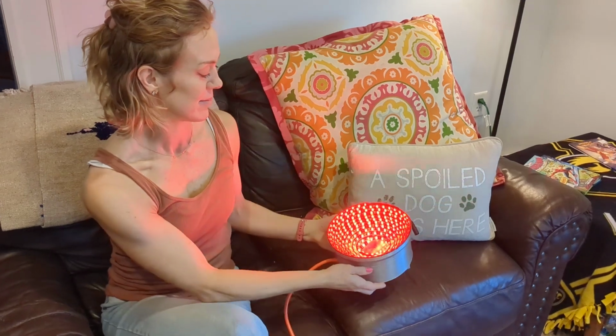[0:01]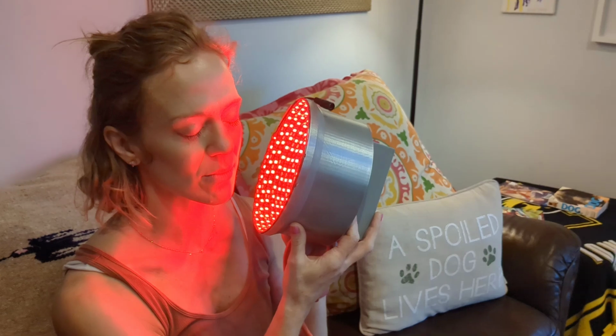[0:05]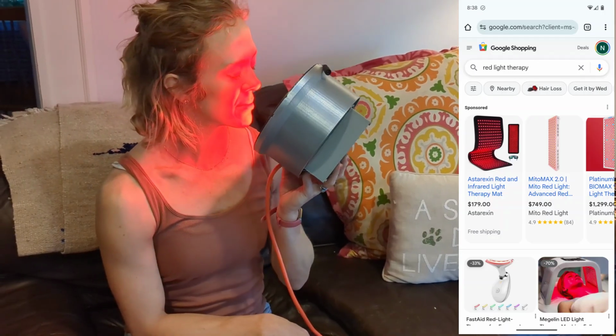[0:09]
This is a $38 red light therapy device that's putting out 60 watts of power. You can spend hundreds or thousands of dollars to purchase the same thing, or you can make it yourself with the plans in this video.
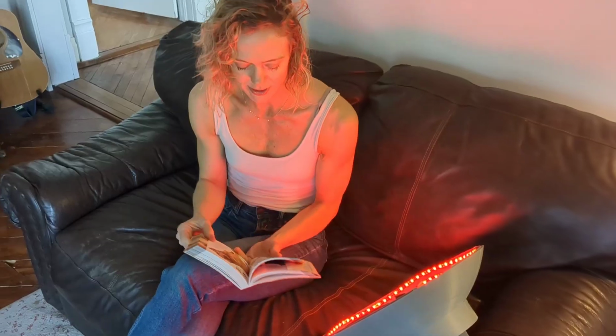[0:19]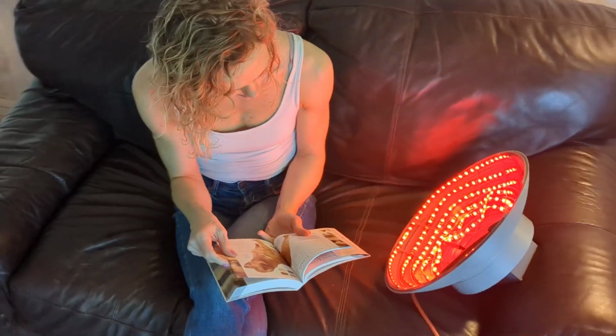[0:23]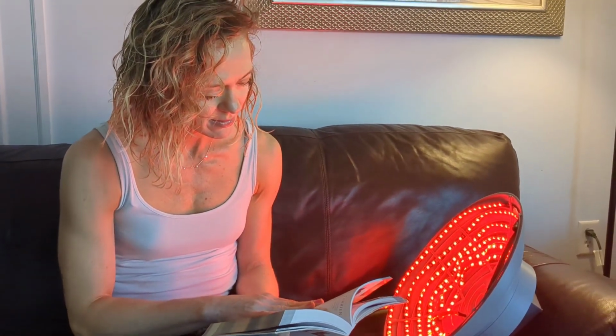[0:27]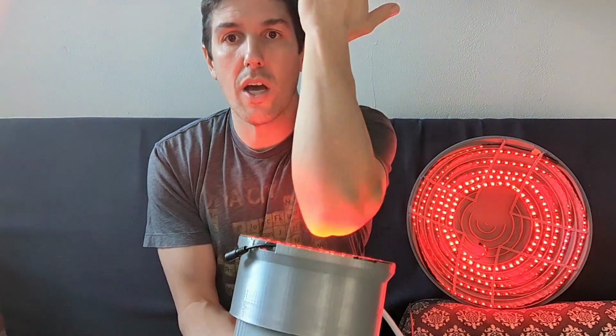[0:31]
Now, red light therapy involves shining light between 600 and 700 nanometers, which is just red light, on your skin, and sometimes 880 nanometer infrared light. Purported health benefits are myriad. Wrinkle reduction, skin health improvement, as well as maybe reducing soreness on joints. I've read some of the scientific papers and it's compelling. There is possibly something there, but more science needs to be done before something can be definitively said.
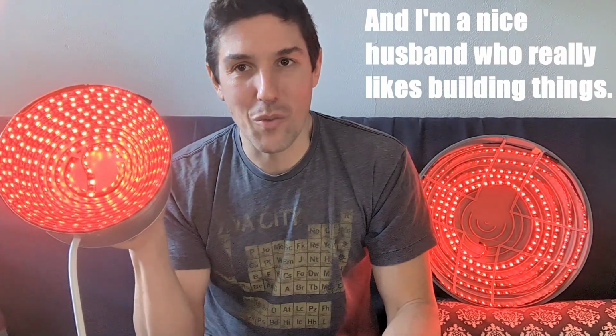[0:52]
So I'm not an evangelist for red light therapy. I can't tell you how to use this and what benefits you should expect. But my wife wanted a red light therapy device. She's been seeing it in her Instagram feeds and wanted one of these things.
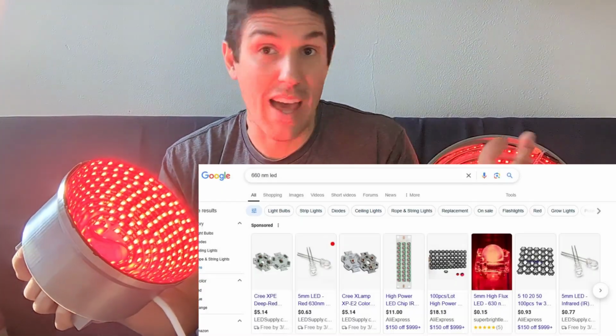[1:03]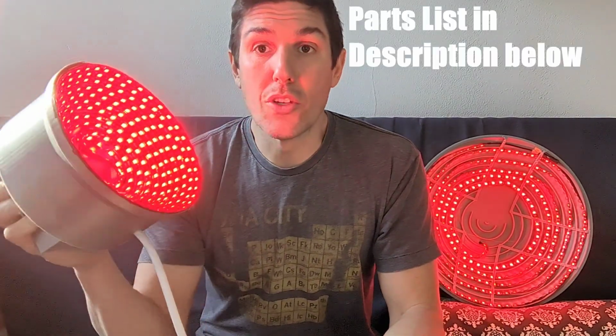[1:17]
And so I looked into it and it's just a 660 nanometer wavelength light. And that is a really common red LED. There are hundreds, thousands probably, of red LEDs at 660 nanometer wavelength, different power, different form factor. They're already out there. So making one of these things is not terribly difficult. So I went ahead and built two different versions of it and it turned out really well. The total cost of the parts here is $38.
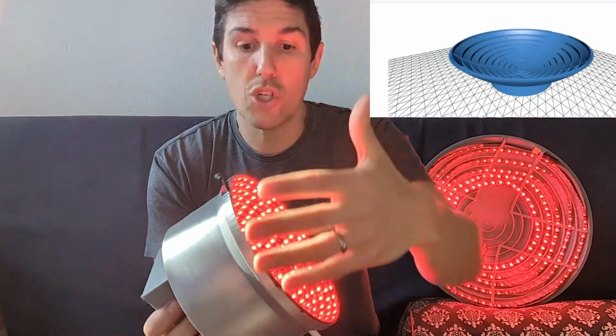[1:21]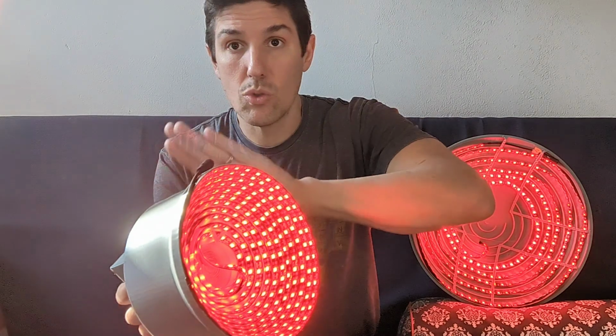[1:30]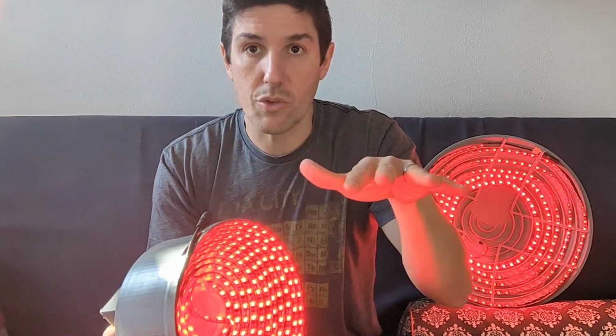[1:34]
This is a 3D printed shell where I was able to wind all of the LEDs and mount them inside of this thing. And in this video, I'll show you how this is assembled, and the links to the 3D printed files are in the description below. Everything's free. When you compare what you're getting here to how much you would pay if you were to buy this commercially, this is a steal. So let's have a look.
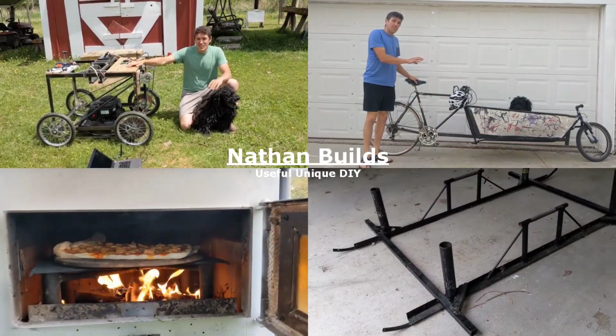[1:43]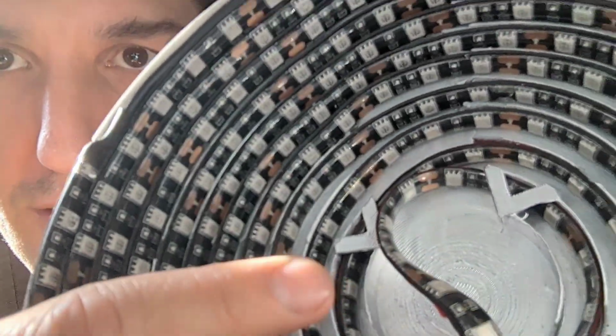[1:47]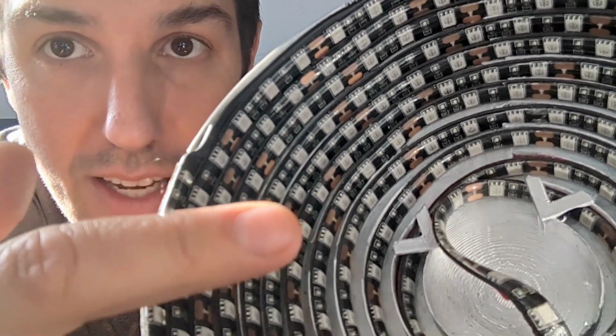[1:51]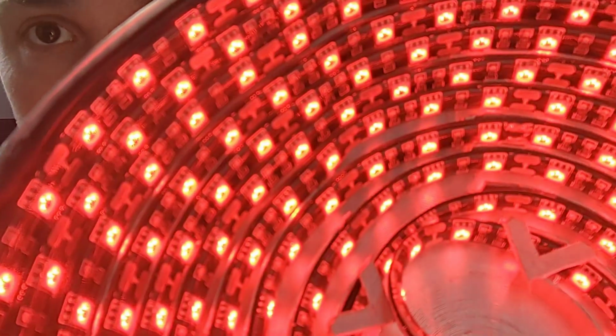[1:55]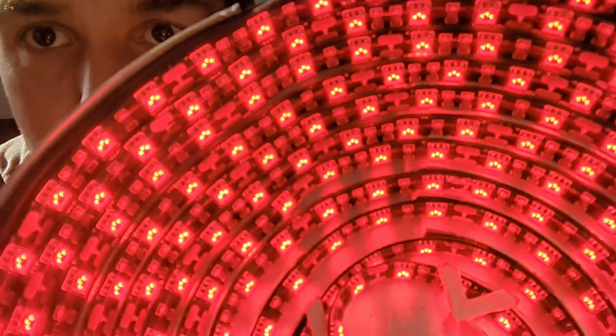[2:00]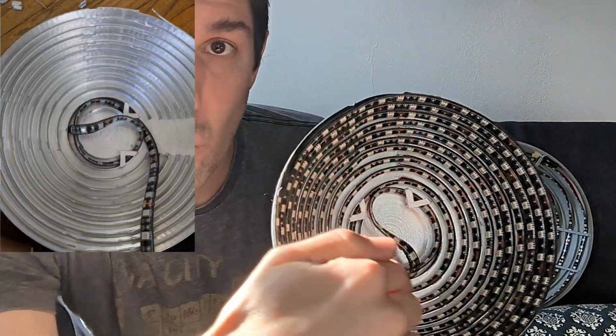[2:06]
What is this exactly? If you look closely here, each one of these little white things is a pack of three LEDs. This is actually just an LED strip that's been wound around and around. And when we turn this on and zoom way in, you can actually see the three LEDs. There's three red LEDs that light up in every one of those white spots. So this is a 16-foot long strip of LEDs that I've wound around in concentric circles until it gets to the middle here, and then it pops through this 3D printed case to the backside.
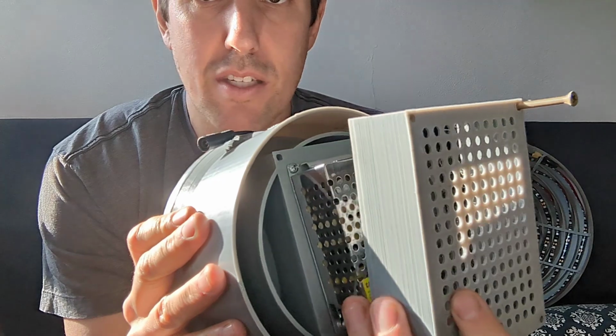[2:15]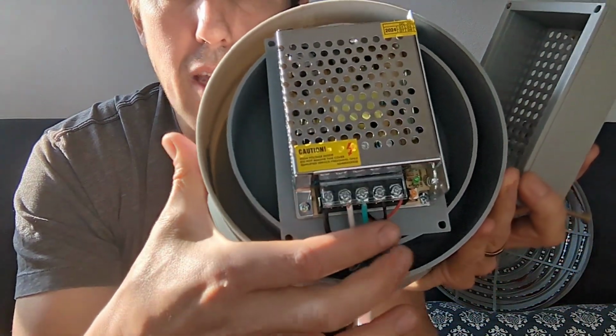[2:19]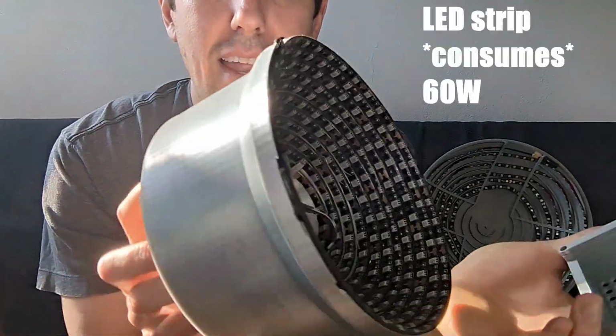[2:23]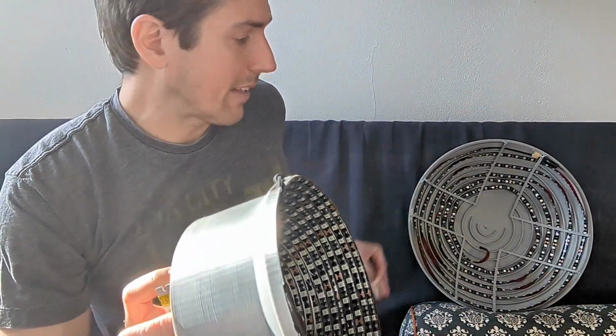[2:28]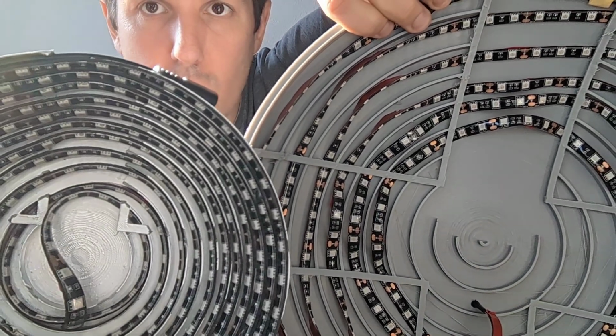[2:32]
Now on the backside here, this is the cover for the power supply. This is taking in wall power and putting out 12 volts. This is a 60 watt power supply and this puts out 60 watts of power. This thing over here is exactly the same, but on this one, the LEDs face out rather than in towards the center. That changes the focal point of these two things.
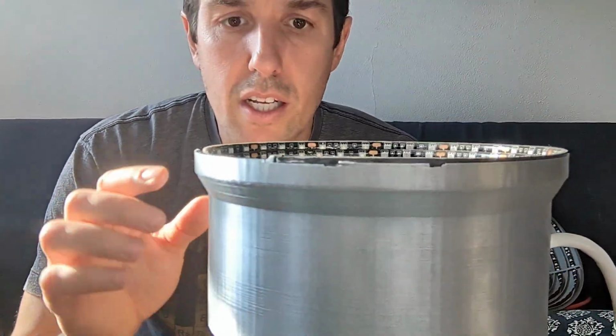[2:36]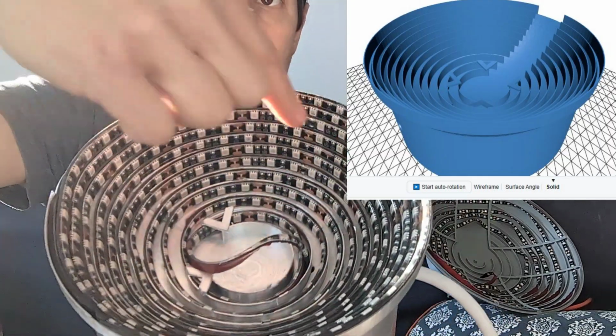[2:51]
Now this case right here was printed to be 200 millimeters across. That's the most common size of 3D printer that's out there. So I think just about anybody can find a 3D printer at your library or your local makerspace and be able to print something like this. And there's little concentric grooves that are in there, and that's actually what this LED strip sticks to.
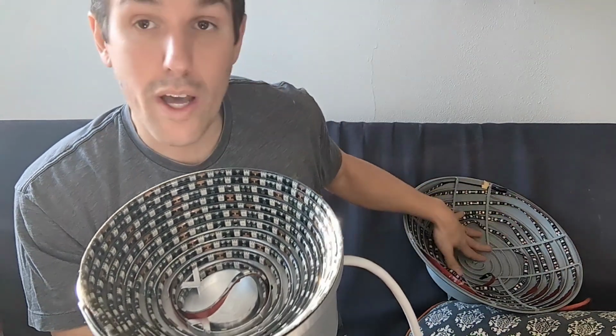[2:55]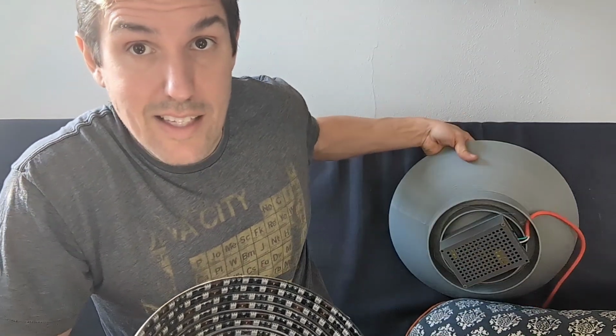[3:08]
Now this one over here is quite a bit larger. It's almost 400 millimeters across, so you're gonna need a really large 3D printer to make this work for you. But it does have a different use case, and if you can get access to a large 3D printer, this is another one that's worth making. It's the exact same power supply on the back and the exact same LED strip in the middle. They both put out 60 watts worth of power. To power this thing, you just plug it into the wall or you put it into a power strip like you heard there and click it on.
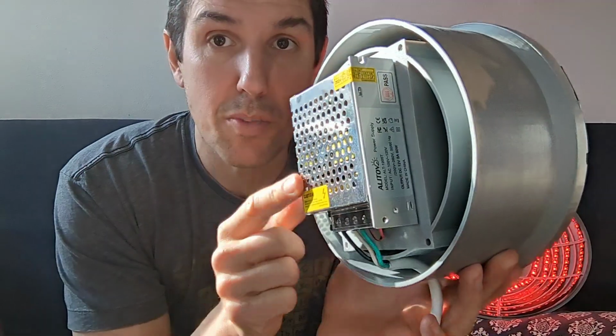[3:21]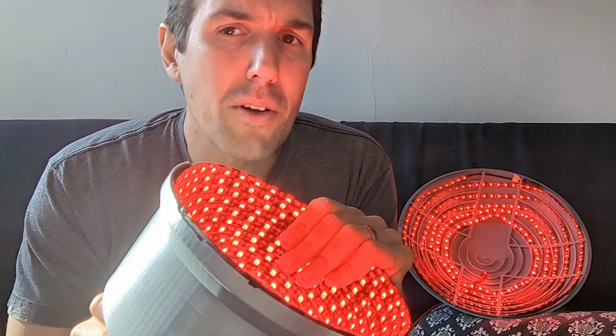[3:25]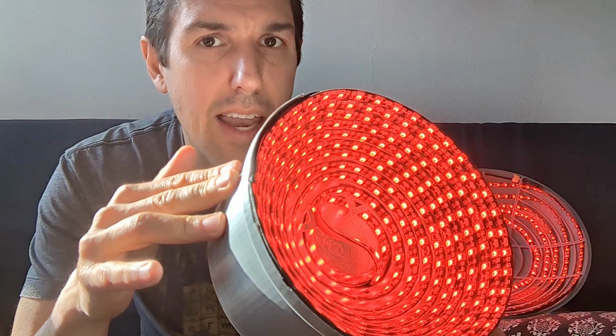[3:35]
The power supply starts putting out 12 volts of power and this thing lights up. Now, after about 10 minutes of use, and I cite 10 minutes because that's a commonly discussed time for red light therapy, this gets warm, but not hot.
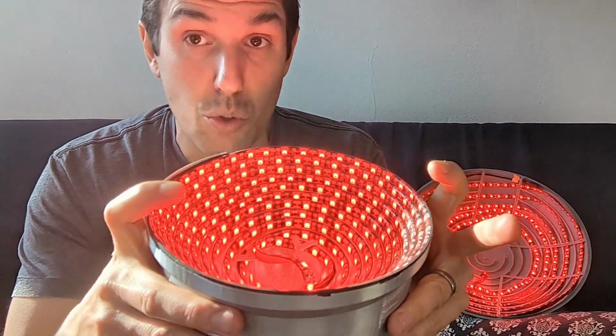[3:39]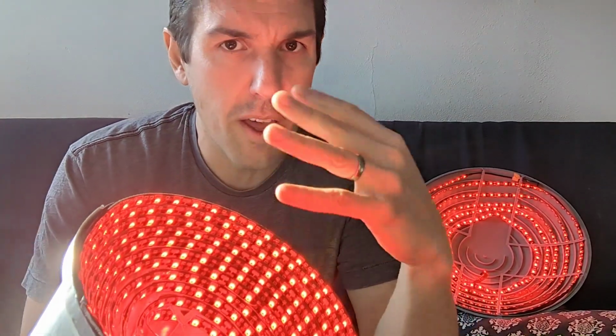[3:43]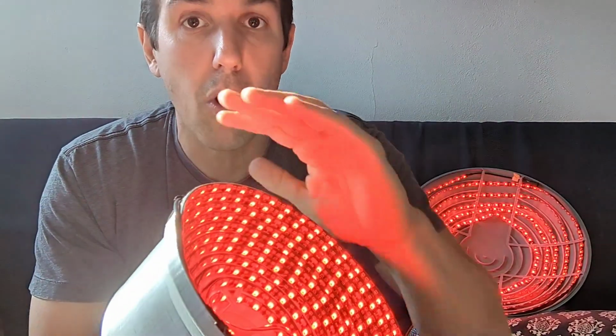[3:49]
And that means that most of our power is actually going into light rather than heat, which is a good thing. We want this to be efficient, and it does seem to be so, very efficient. It's putting out nearly all light and not actually heating up all that much. So most of what we're putting into this is going to be light that actually hits our face.
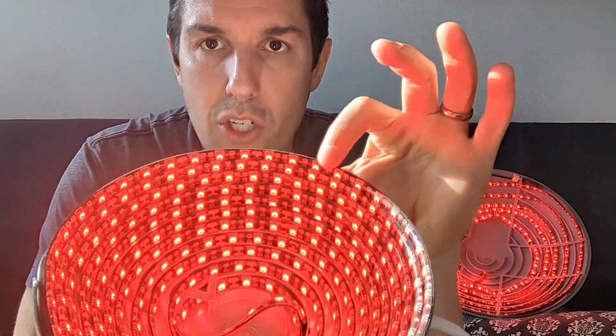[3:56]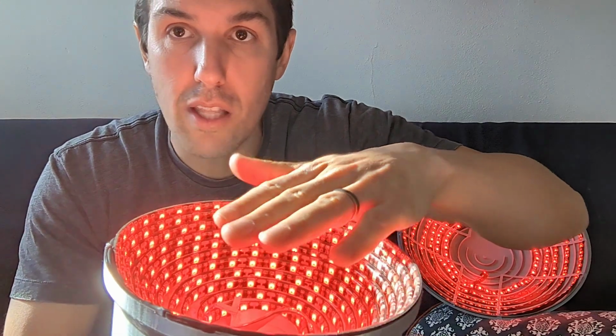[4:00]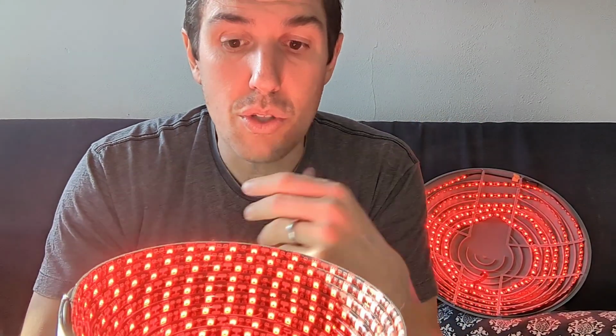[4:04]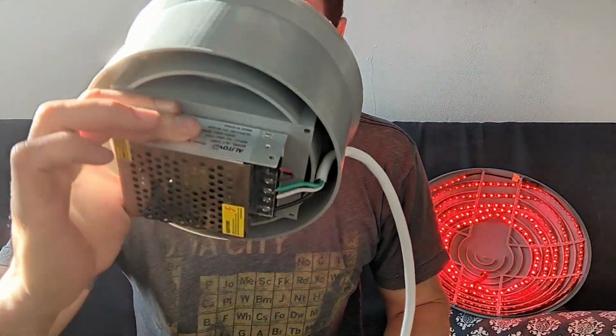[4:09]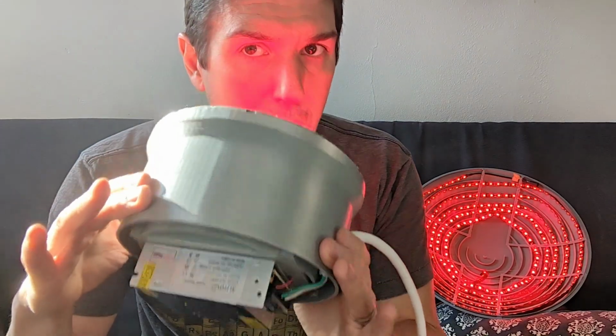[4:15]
This one here, as I mentioned, all of these LED strips are turned on end, so they're sort of facing their light towards the middle. The focal point is probably somewhere right around here. So an obvious use case for this thing would be, you can put an elbow or a knee into it, or even your entire face or your scalp if that's what you want to do. It's going to be used very close up though, so probably held in place.
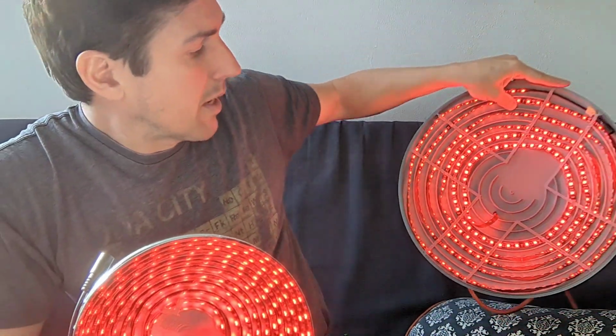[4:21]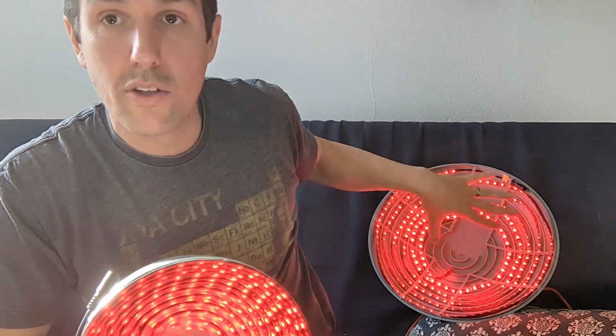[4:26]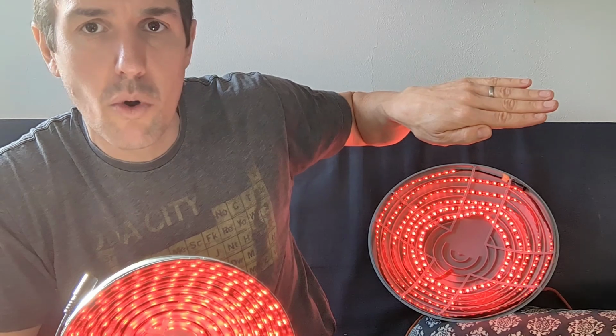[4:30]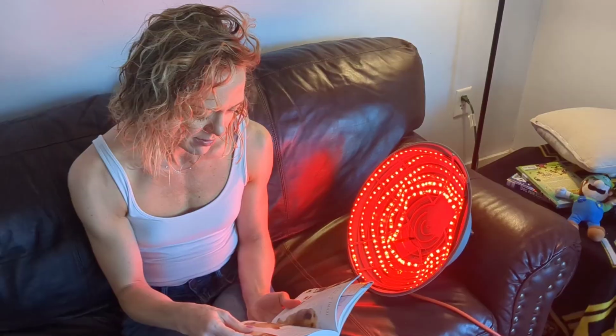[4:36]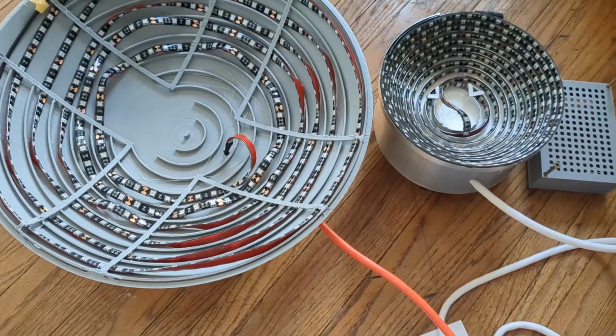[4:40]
Whereas this is much, much larger and all of these LEDs are outward facing. Because it's so much larger, I didn't have to turn the LEDs on end. I could actually just wind it around and around inside there. And since the light is coming out, the focal point is probably somewhat more like out here. So if you were to prop this up on your desk while you were working, you could get red light therapy from this while you're sitting there. So now that you know how this works, let's see how it's built.
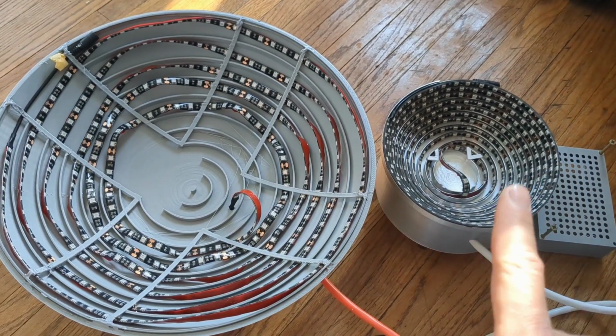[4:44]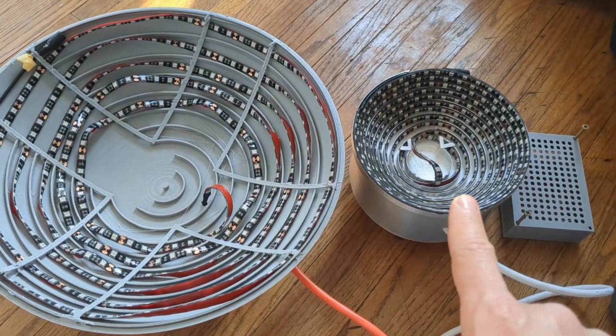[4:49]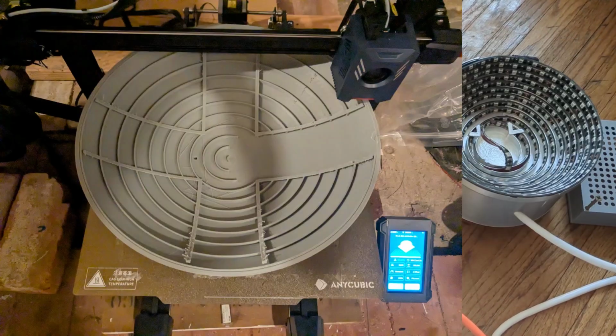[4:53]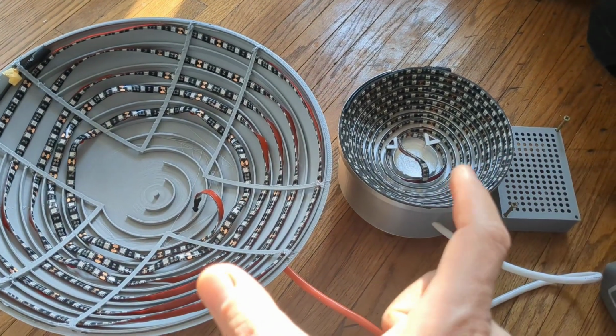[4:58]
The first thing to start with is the 3D models. They're linked in the description below. As I mentioned, this should fit on any standard 3D printer out there. This one requires a really big one. I used a Kobra 2 Max from Anycubic. These are both printed in PLA, 10% infill, no brim, and no supports.
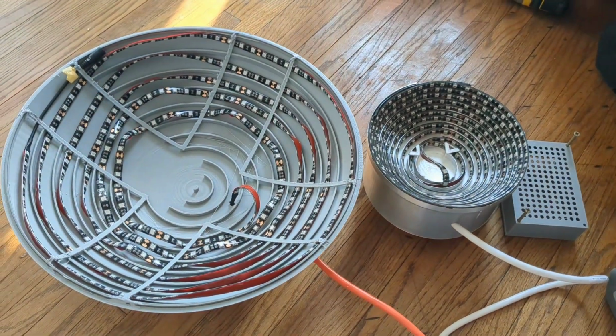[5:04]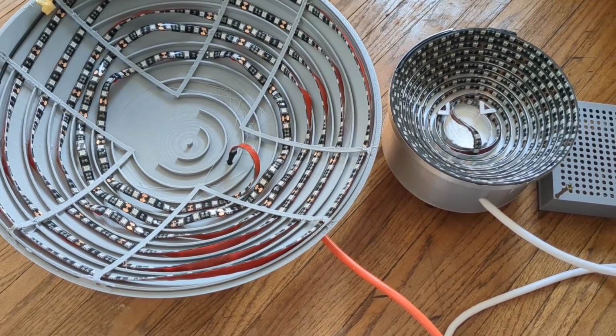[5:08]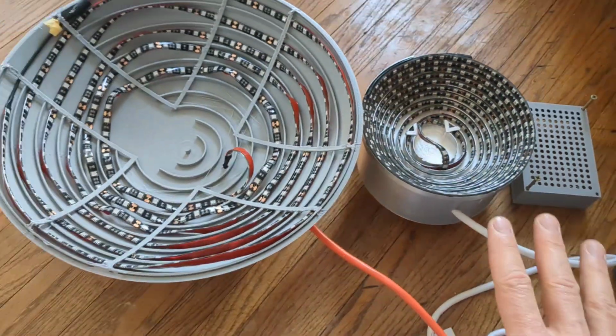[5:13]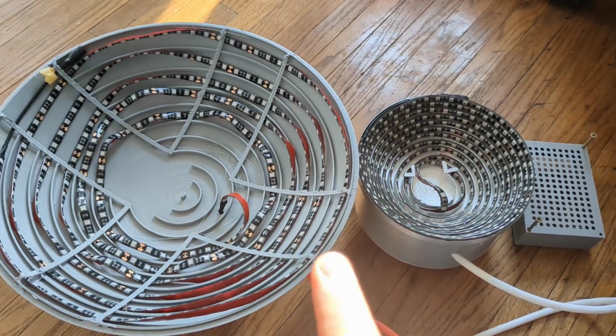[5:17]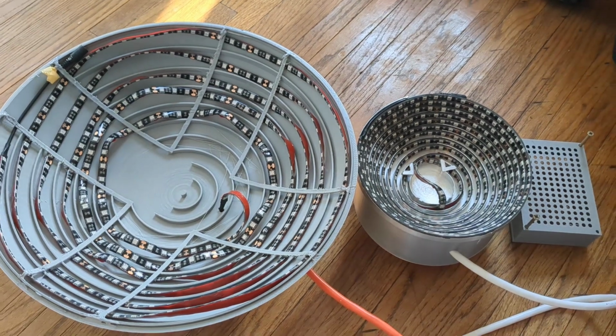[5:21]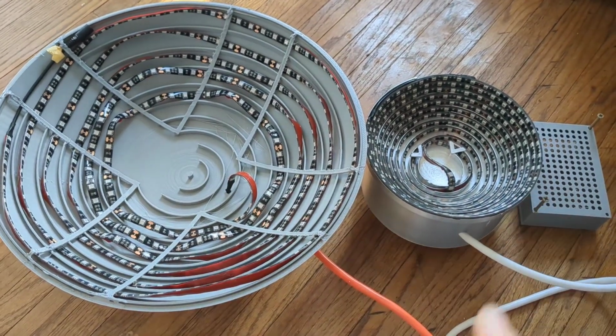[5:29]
If that didn't make sense to you, which it didn't to me about a year ago, I was new to 3D printing also, basically you take the models that are linked below and you have to turn it into something that your printer can use. It will be specific to whatever printer you have. So I will put a link in the description down below so that you can learn a little bit more about 3D printing and take these STLs and turn them into something that your 3D printer can use. For those who are already familiar, those are the instructions that you need.
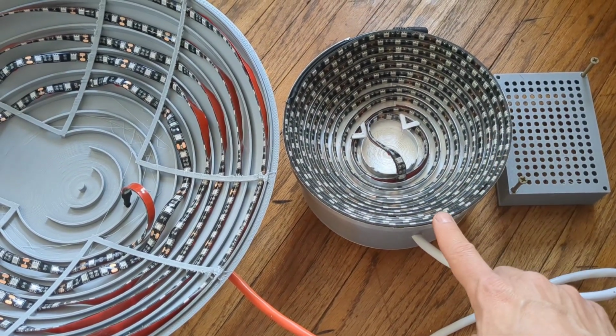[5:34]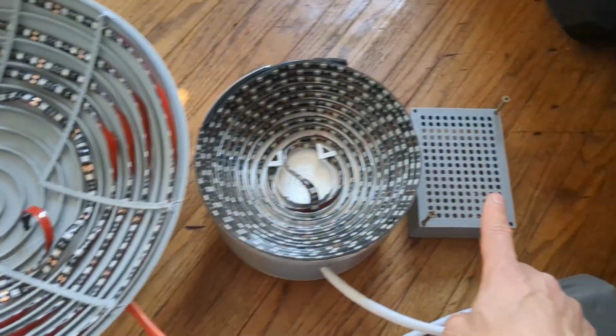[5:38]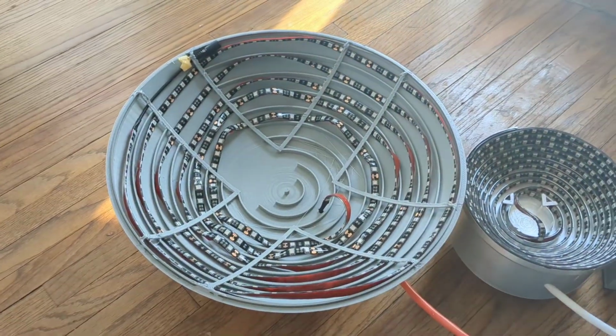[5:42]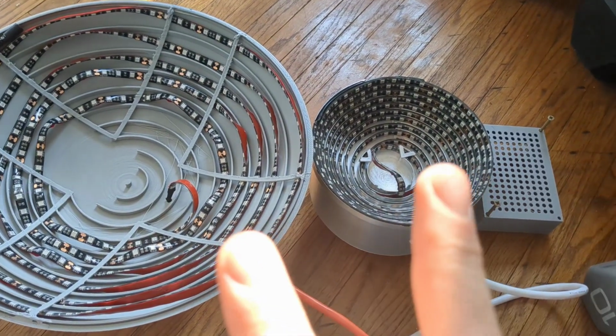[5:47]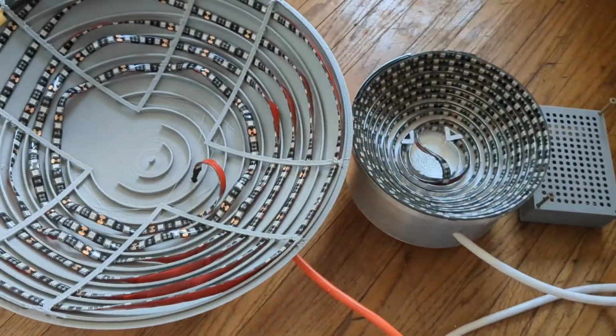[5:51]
This is printed as two separate files because it won't print on one standard 3D printer. This one over here is just one file where the power supply cover, this thing right here, is actually included in this print because you have enough build area on one of those large printers to go ahead and stick it all on one.
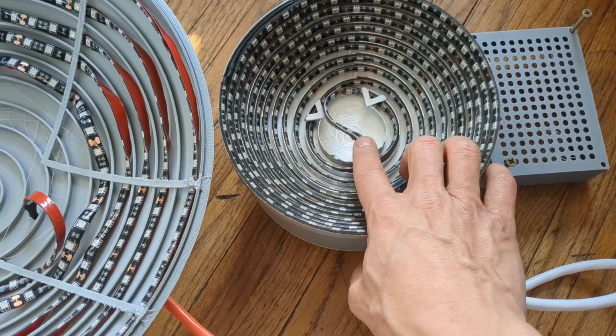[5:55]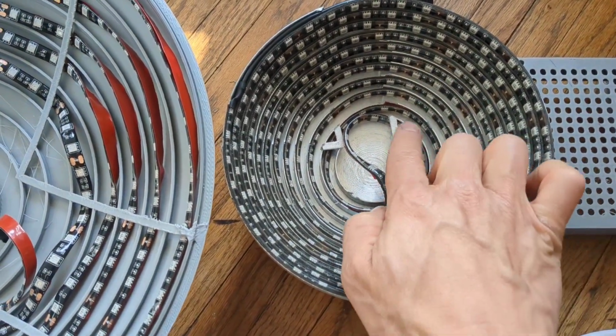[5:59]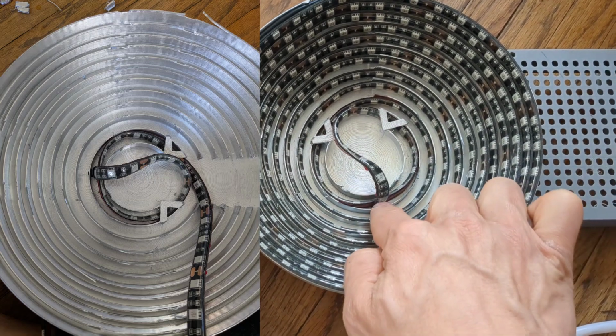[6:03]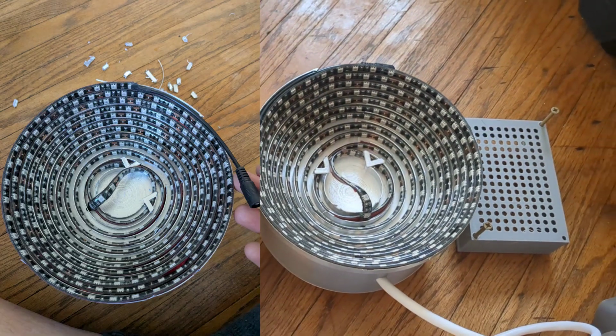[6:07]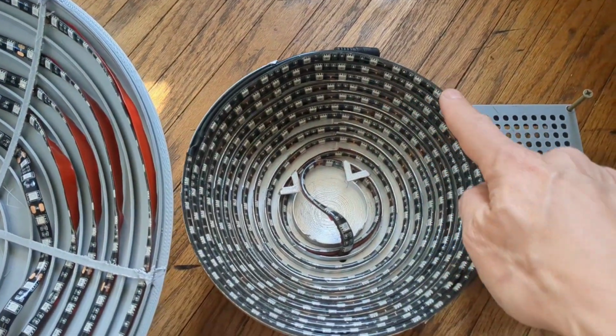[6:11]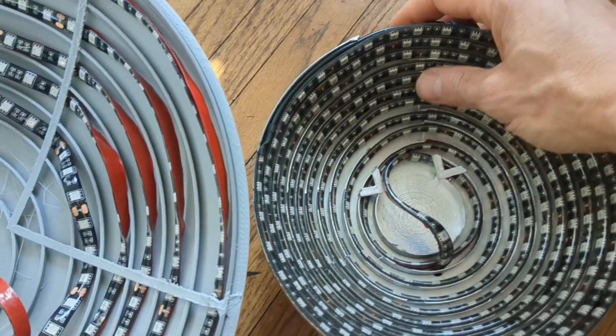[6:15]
Now that you have your 3D printed files in hand, like actual plastic here, you're going to want to install the LED strip. And it's slightly different for these two. This one over here, I actually wound it through these little keepers right here, and then I plugged it in through this hole right here, and then I wound backwards. So taking a look at how that works, it should complete its last loop and run out of LED strip right here.
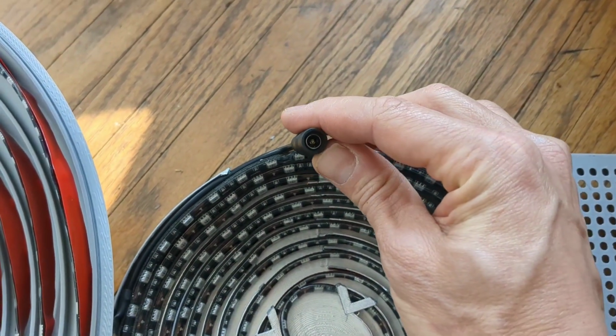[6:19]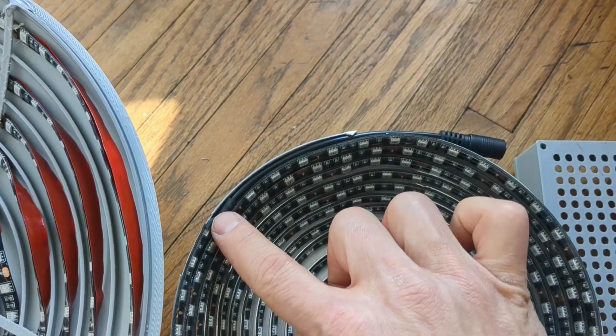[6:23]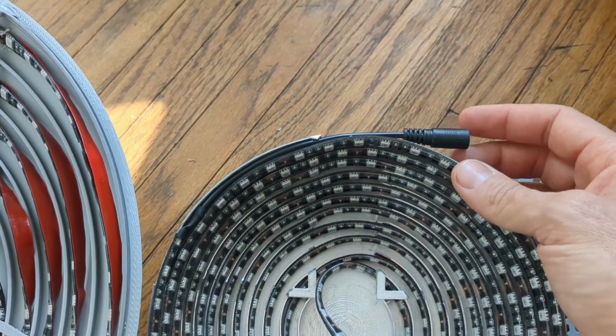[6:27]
You can see that at the end here, there's actually a plug on this. This is a more standard LED plug. This is what would be usually used to plug it into a power supply. I went ahead and kept it on. You could cut it off if you wanted and tape it off, but I went ahead and kept it on just in case I want to use it at some time later.
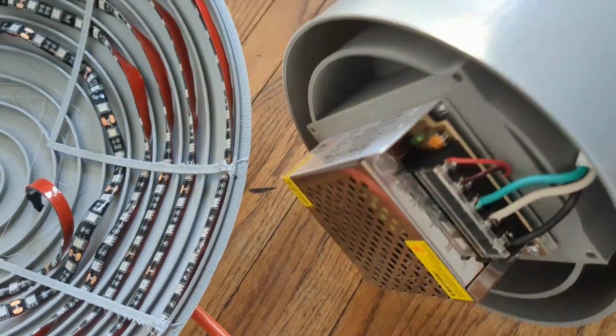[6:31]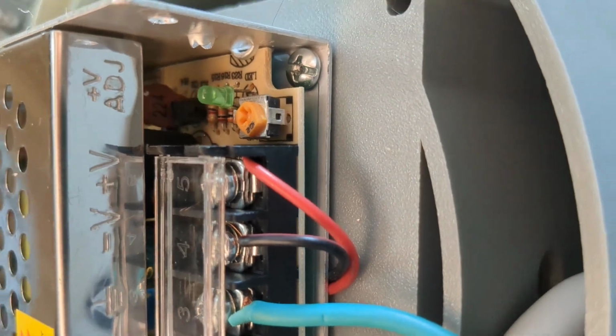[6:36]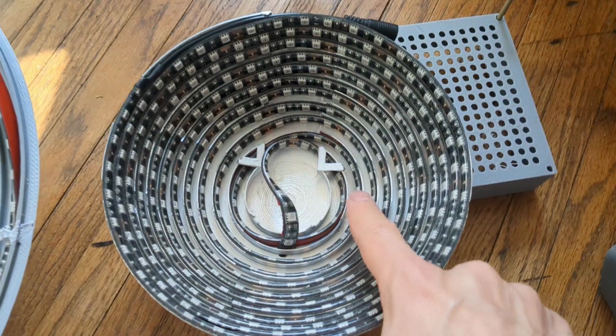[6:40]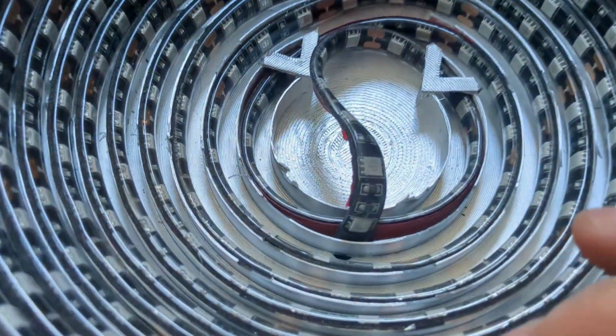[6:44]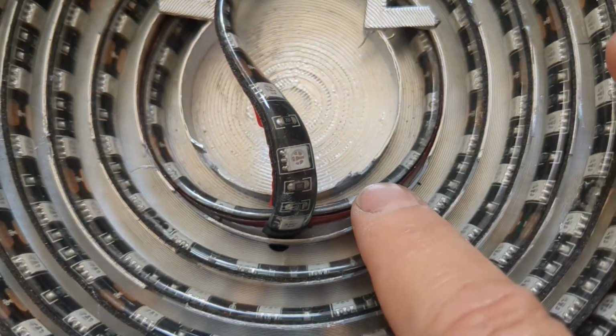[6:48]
Instead, I took the other end of the LED, which is this bare red and black wire, and I was able to plug that directly into my power supply. As I was winding this in place, as soon as I got to right here, I actually pulled the back of this LED off. There, you see there's a little bit of red backing there that keeps the sticky from being exposed.
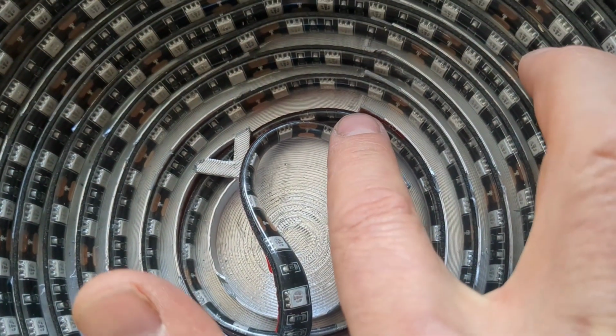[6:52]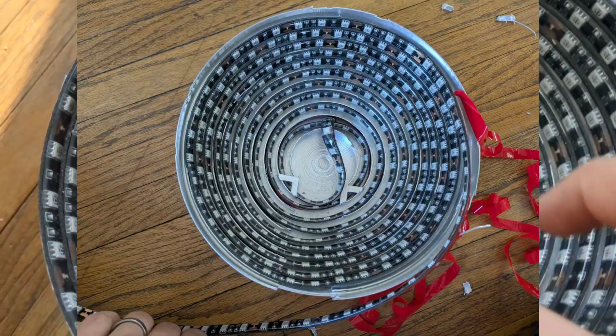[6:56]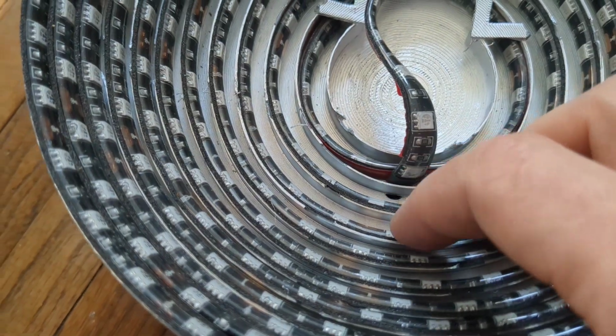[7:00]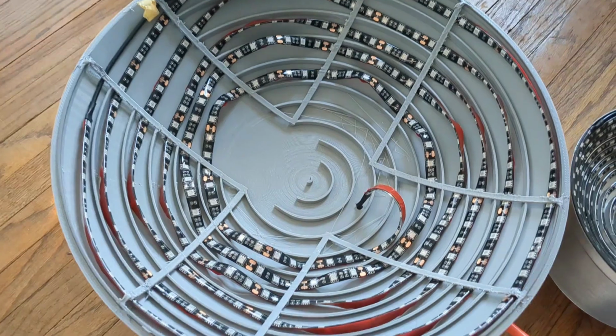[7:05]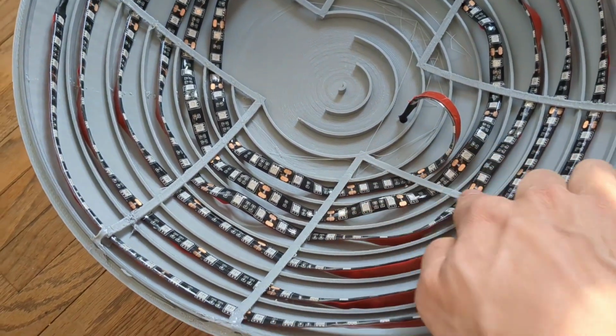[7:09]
As soon as I got to about here, I started pulling off that red backing, and so my LED strip is actually stuck to these little grooves that you see in here all the way around. So that keeps that LED in place on this one. Now, if you look over here, these keeper strips of PLA actually keep our LED in place for us.
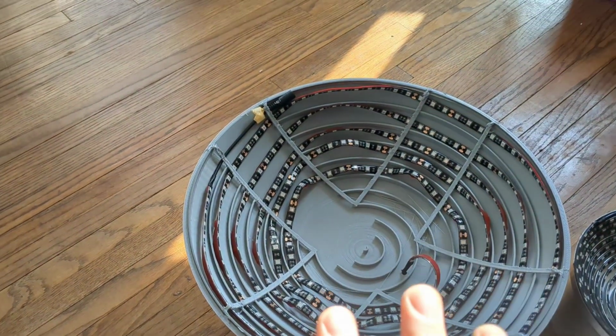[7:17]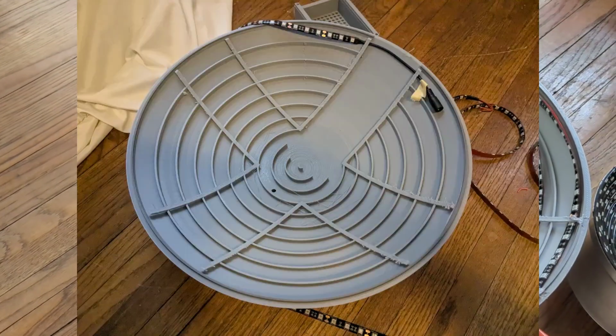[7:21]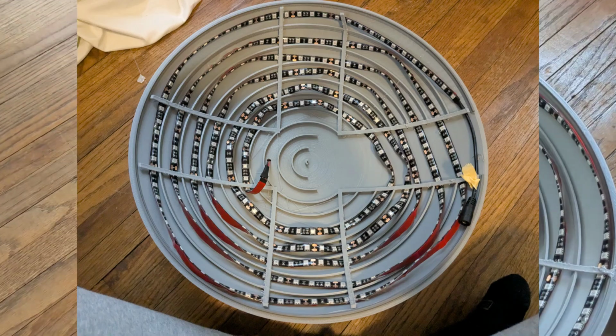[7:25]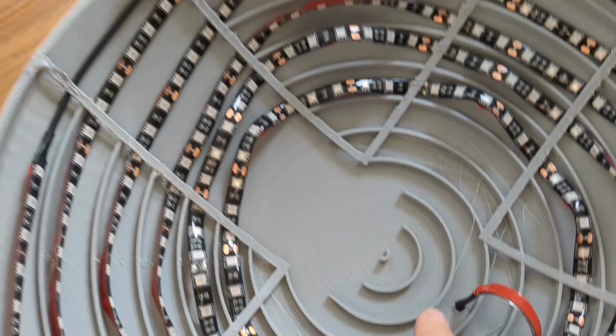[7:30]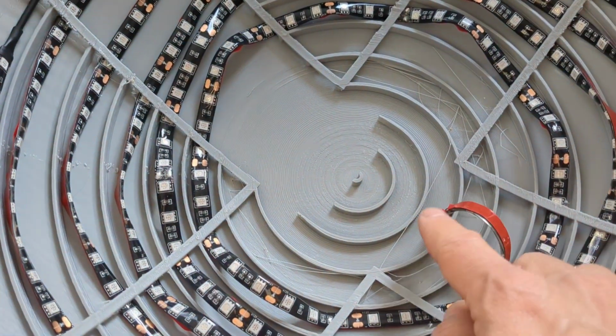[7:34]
We don't have to take off the sticky back, so I did not take the sticky back off of any of those. Instead, the process for this one was to start at the end here and push it through all the way down until I ran out of LED strip, and again, put it right through the hole. And the same thing here, I kept the plug just in case I want to use it at some point, and I put those bare wires through.
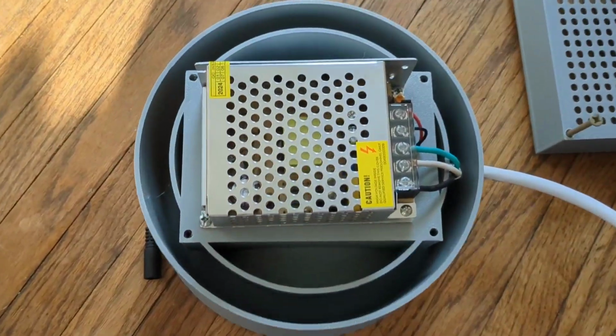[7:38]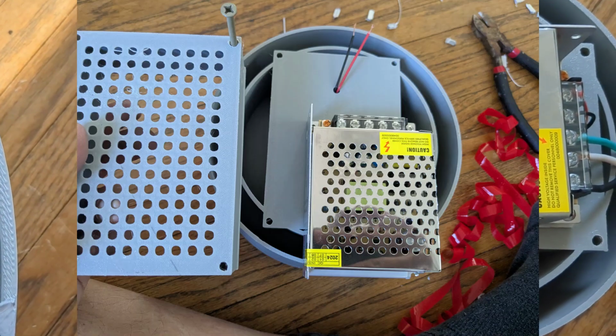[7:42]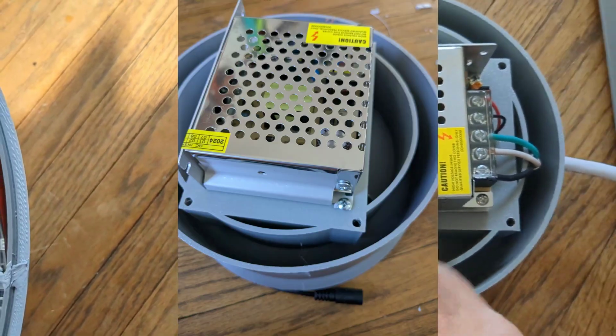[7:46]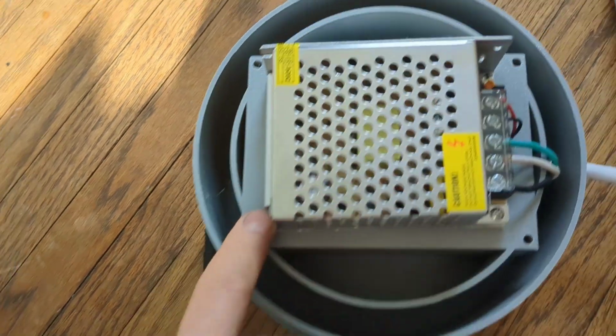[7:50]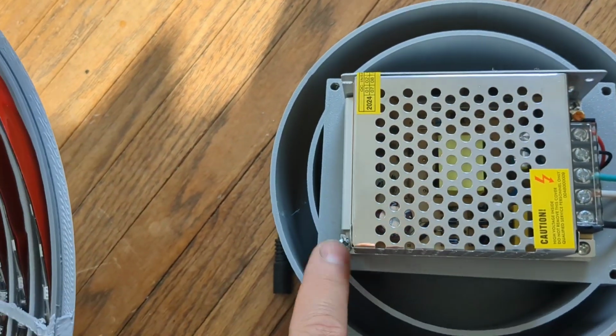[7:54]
Now the next step, once you have that done, you take your power supply right here and put it on the back side of this, and I actually had to force screws in. I didn't have holes pre-cut for this because I didn't know exactly where they'd end up, so I didn't hard code where the holes for this screw and this screw should go. You should just push them in with a screwdriver. It's PLA, you can drive right into that.
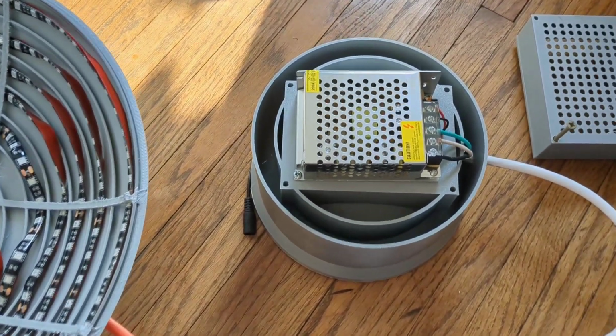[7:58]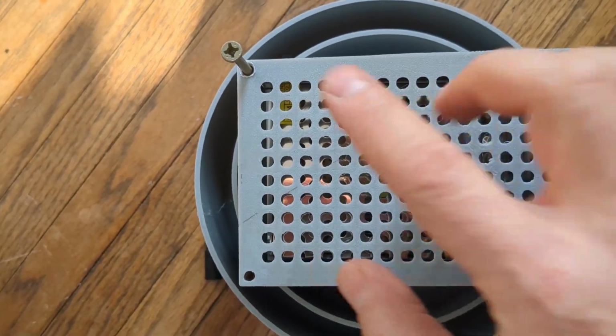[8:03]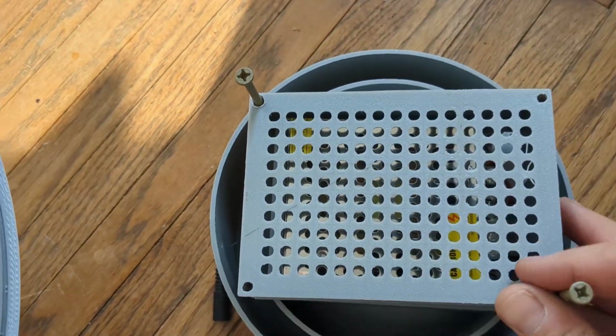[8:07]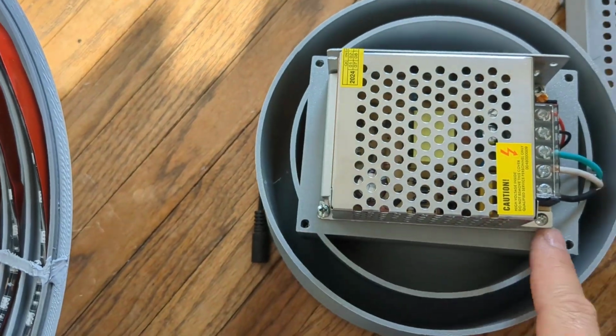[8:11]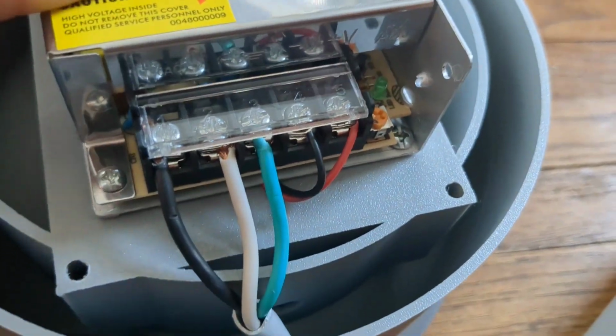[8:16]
So you get your power supply mounted, and you can make sure that this will fit over it at that point. I used 3-inch deck screws. You could use number 8 drywall screws, so they're thick enough to grab into these holes right here. So you get your power supply mounted, and then you have to put in all of these wires.
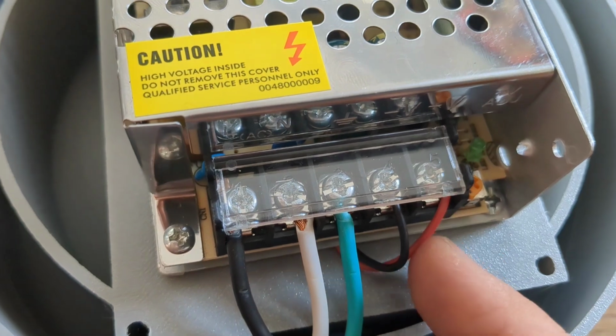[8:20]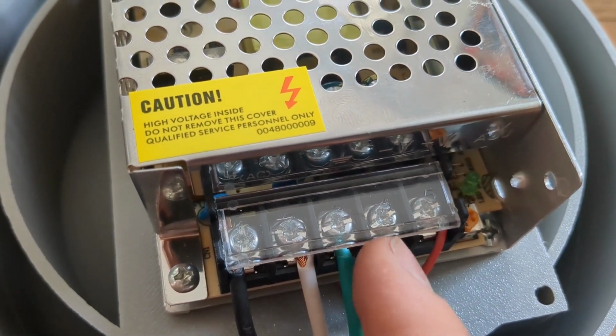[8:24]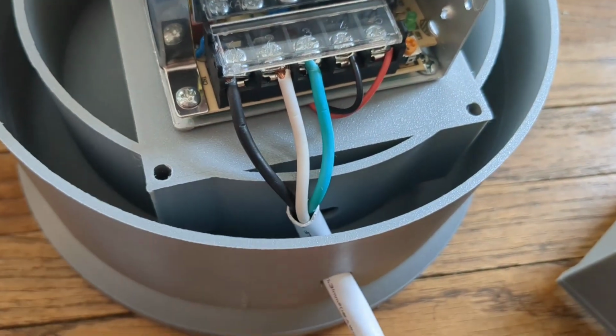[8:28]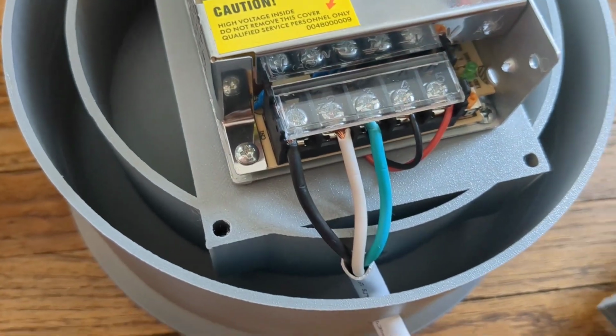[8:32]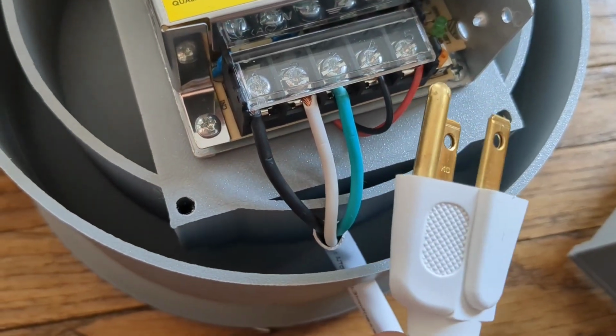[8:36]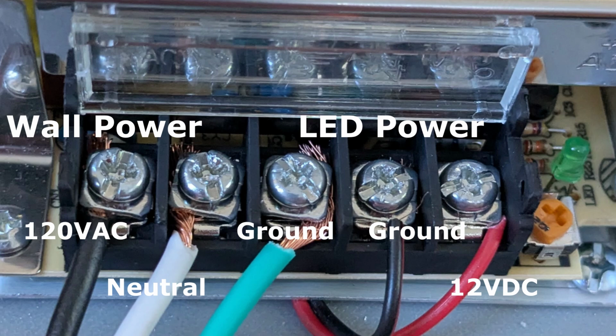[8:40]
Now we already talked about this. This is the hot, the 12 volt. And this is the 0 volt or ground coming from our LED strip. These things right here are just an extension cord. I cut off the end of an extension cord, or you can buy them pre-cut, but you can see over here, the other end of this is just a regular wall plug. I cut off the end, strip the wires, and this is hot, neutral, and ground that are going in there. And this right here pops up.
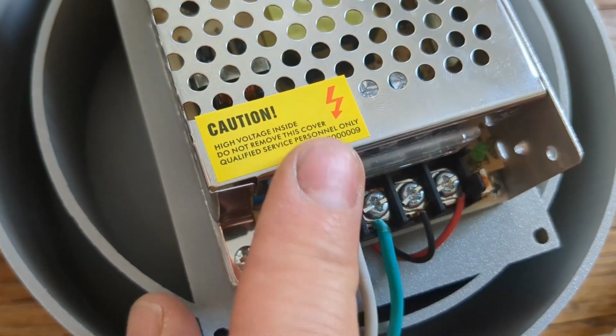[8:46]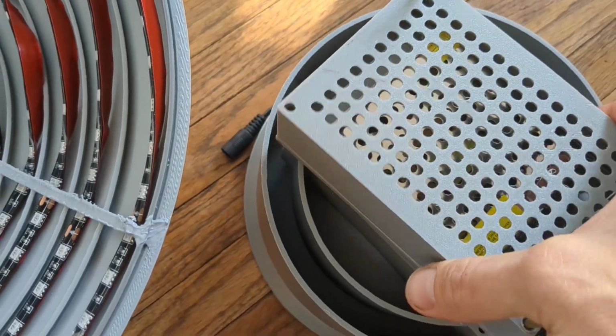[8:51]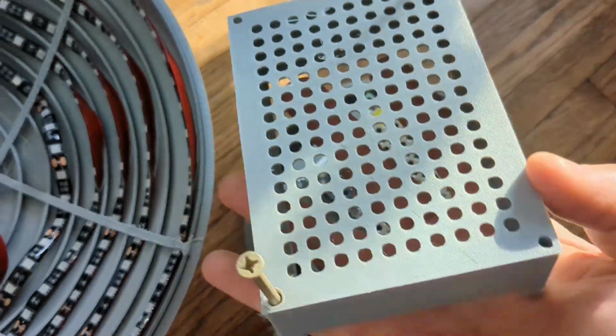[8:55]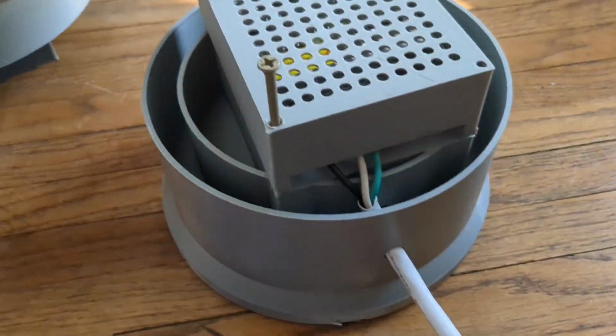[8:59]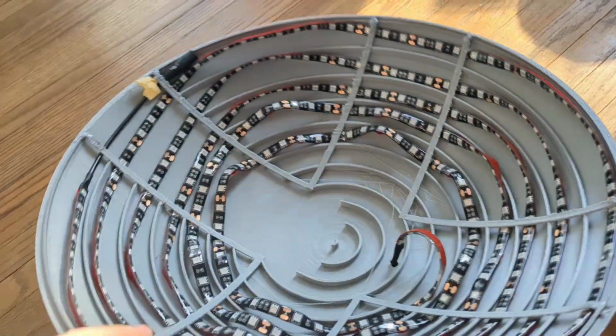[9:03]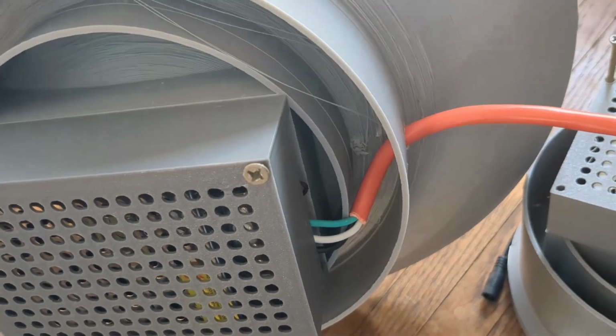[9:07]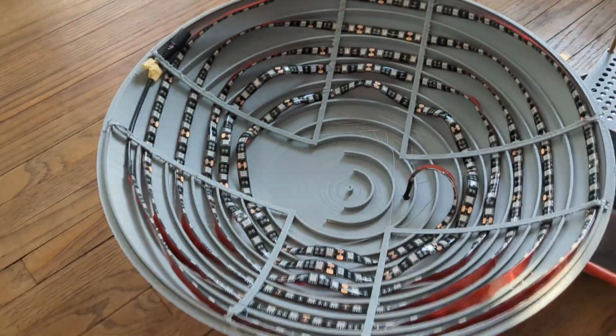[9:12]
You just screw those screws in place, secure your wires down, and then when you're all done with that, you put this cover in place. Make sure that you have this little end right here. It's got a gap for the wire to come out. You put it right there, screw it down into place, and that will protect your wires from wandering fingers accidentally getting in there. On the back side of this big one, it's exactly the same story. So I've got an extension cord going in there. The wires are protected, and that's all there is to it.
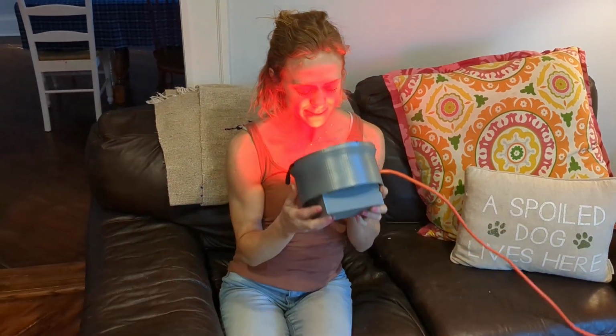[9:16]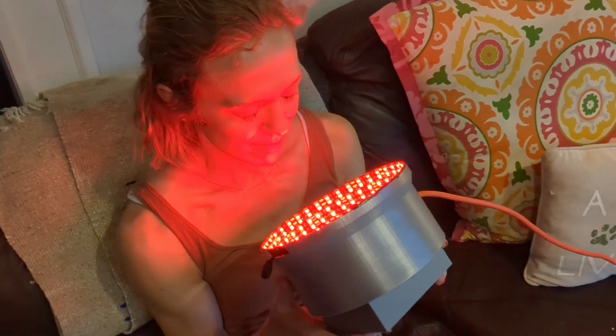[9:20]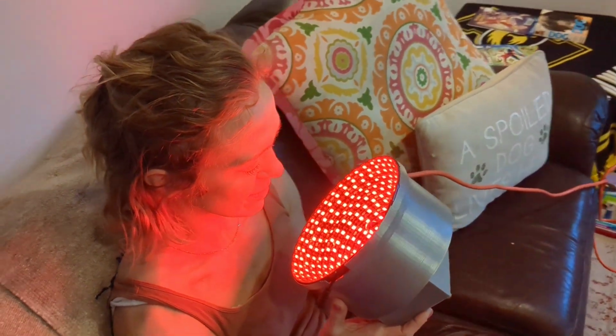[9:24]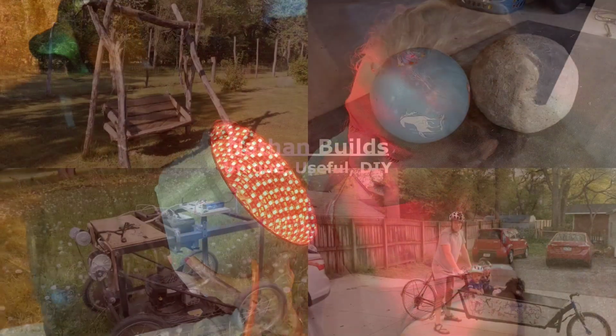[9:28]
So there you have it. This is a really simple build. It's a 3D print, stick some LEDs on and put some power to it. And it's a great result, you know? This thing is very powerful and it undercuts what's out there on the market by hundreds or even thousands of dollars for the same thing.